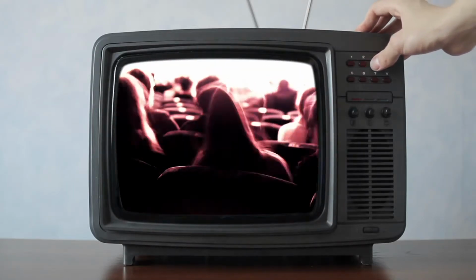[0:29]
So what do we do if we have one of these, but we need something more precise? This is just a cheap kitchen scale. Rather than spending $15 or $25 to buy a more accurate one, we're going to make one out of things we have lying around the house. The purpose of this, we'll use it in future projects to measure out fertilizers and nutrient solutions for our hydroponic system. Let's get started.
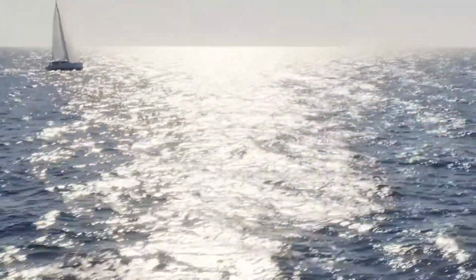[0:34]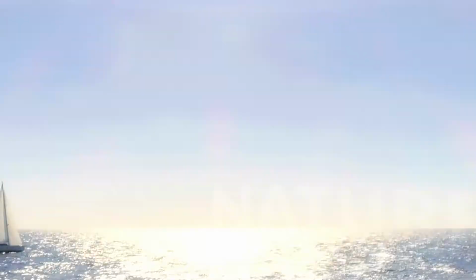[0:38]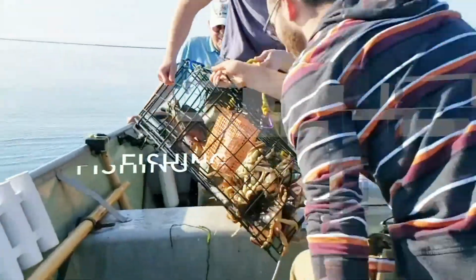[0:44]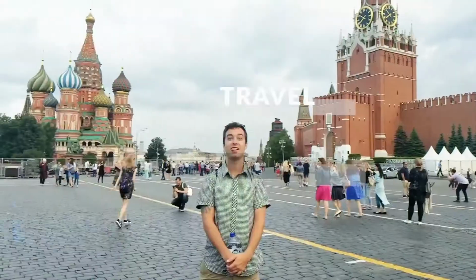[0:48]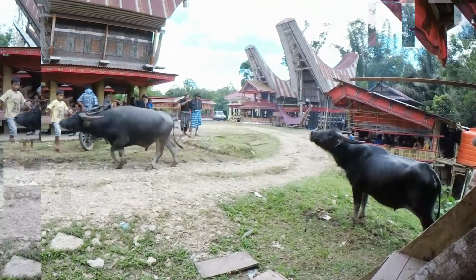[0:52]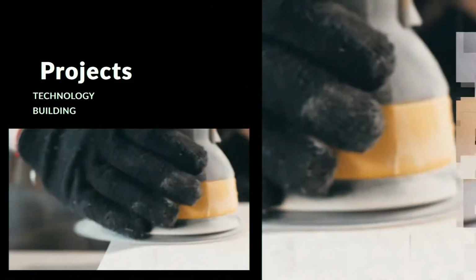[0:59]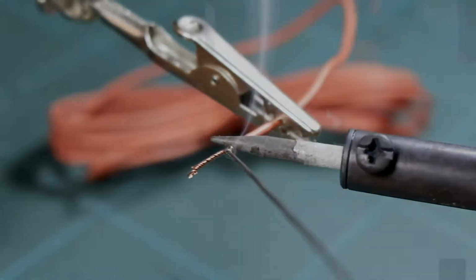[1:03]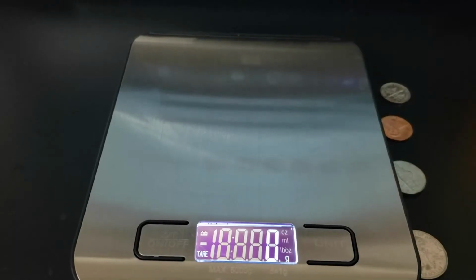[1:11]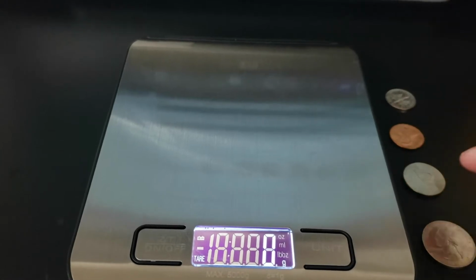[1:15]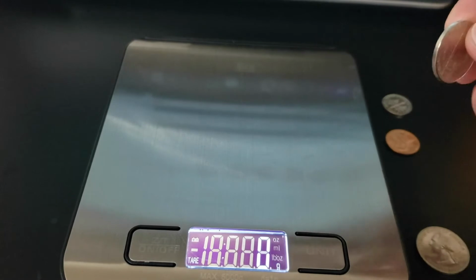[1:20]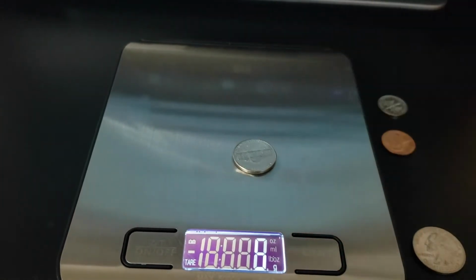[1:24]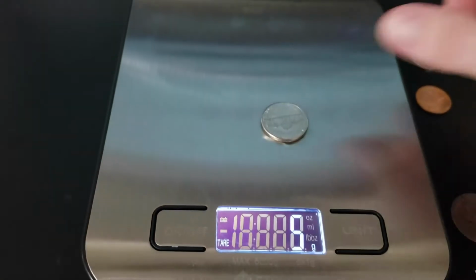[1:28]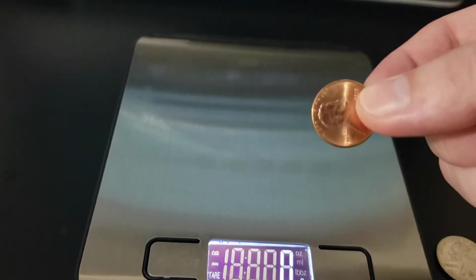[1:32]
All right, let's take a look at the problem we have. We have a series of very accurate weight measurements we can use, but this scale is not accurate enough for this. So take, for example, a US nickel, which weighs 5 grams. If we put it on the scale, yeah, it measures in at 5 grams. But then let's take something a little smaller, like a penny. A US penny should weigh 2.5 grams.
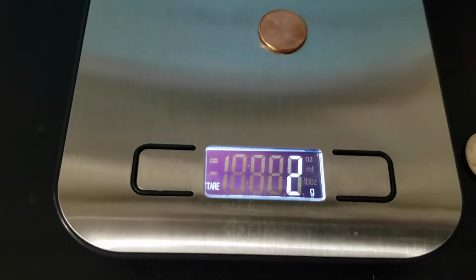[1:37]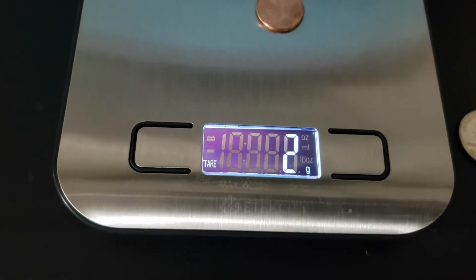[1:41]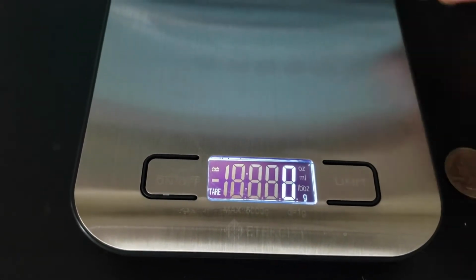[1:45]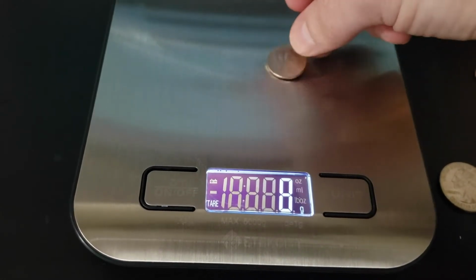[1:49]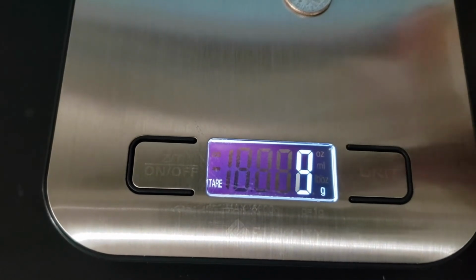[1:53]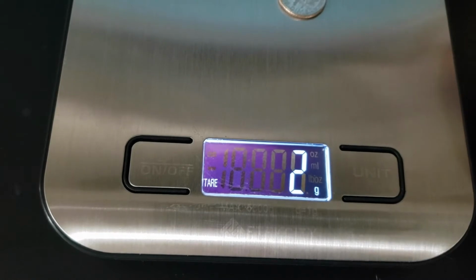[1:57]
And we have 2 grams. So is it 2.1? Is it 2.9? We can't really be sure. And let's take a US dime. This should weigh 2.2 grams. And this one weighs 2. You saw it jump to 3. See, now it's at 3, now it's at 2. It doesn't really know what it weighs.
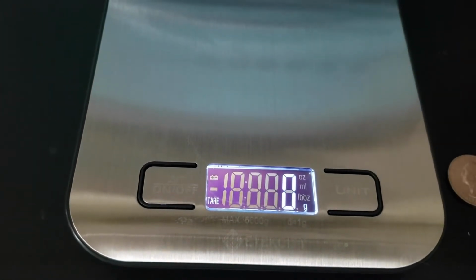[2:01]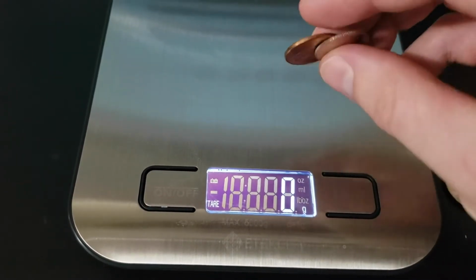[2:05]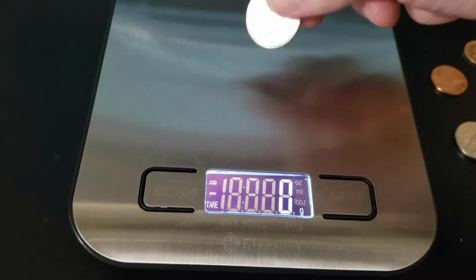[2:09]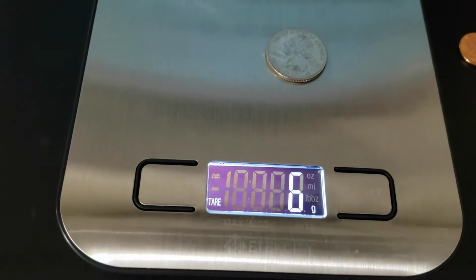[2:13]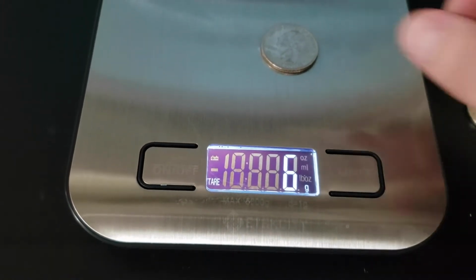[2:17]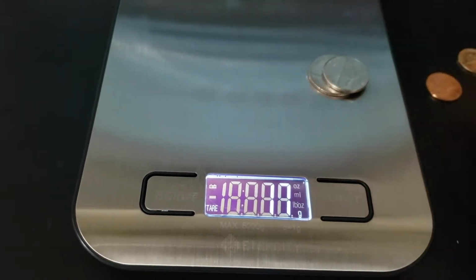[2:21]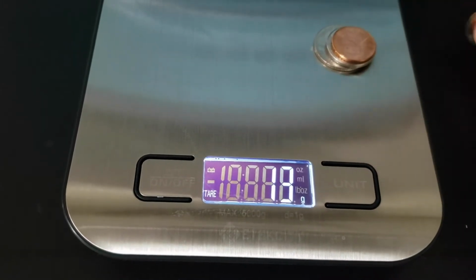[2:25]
And by logic, a penny is bigger than a dime. So why do they weigh the same amount? They don't. And let's take a quarter. What if we want something a little bigger but still more precise? This weighs 6 grams, but a quarter actually weighs 5.67 grams. So we need to get very precise with this. We could stack these and try to come up with an accurate representation, but let's just build something that's going to work a little bit better.
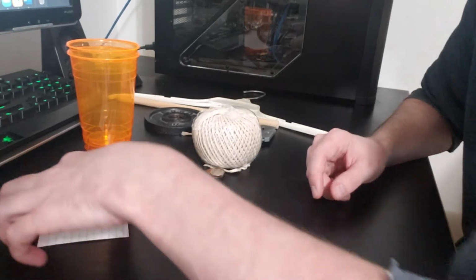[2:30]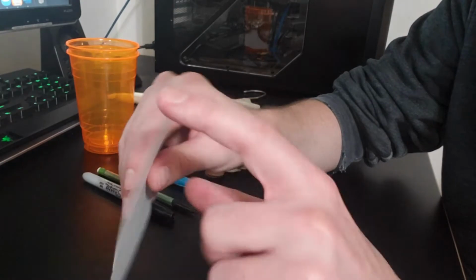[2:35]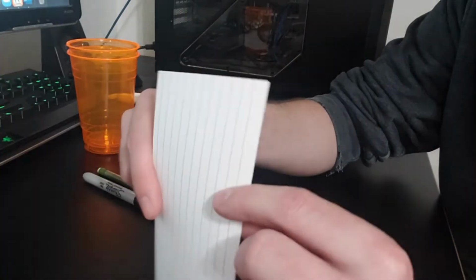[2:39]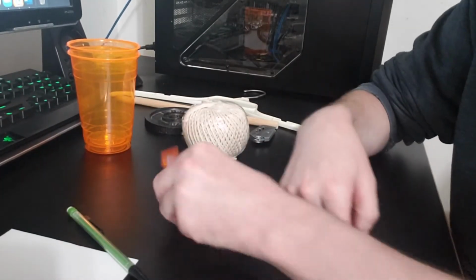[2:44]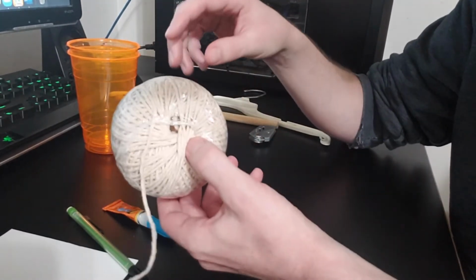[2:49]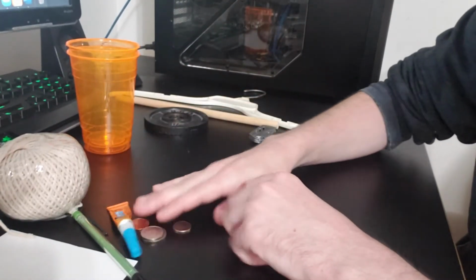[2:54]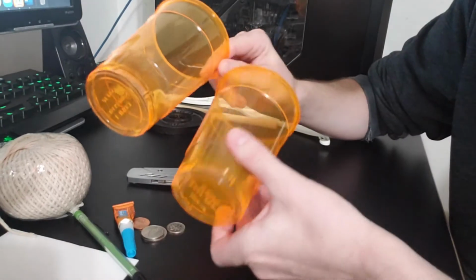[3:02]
Let's take a look at what we'll need for this project. I have an index card here. What we need is straight lines and 90-degree corners, so I'm just using a piece of cardstock for that. Sharpie, pencil, some kind of a super glue, twine, just whatever I had lying around. Any kind would work for this. We have our weights, some kind of a sharp knife, 2 plastic cups. These are going to be our holding trays for what we're weighing.
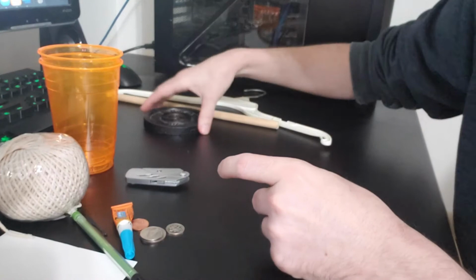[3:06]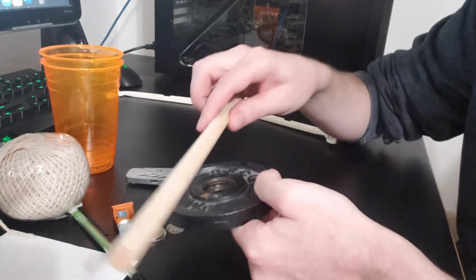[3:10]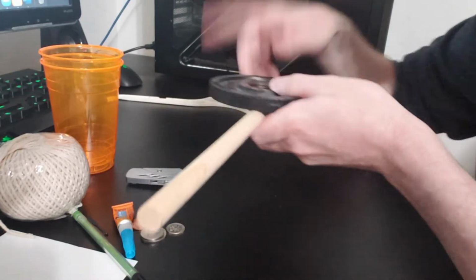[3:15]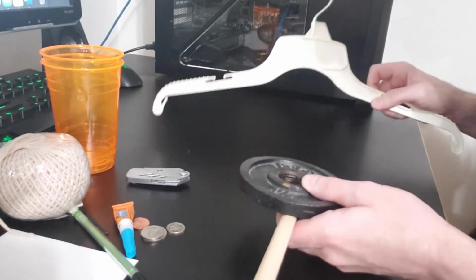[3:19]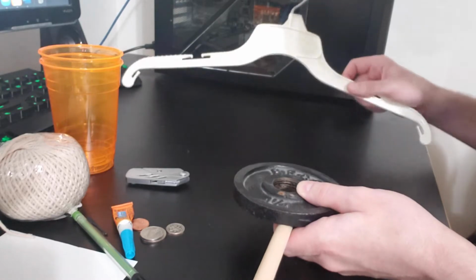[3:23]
A weight, and that's strictly to hold the pole down so I can hang it off of a desk, or in my case I'll hang it off of my computer right here. And this will be our measuring system. This will be a coat hanger. Any kind of coat hanger will be fine. This is just a scrap one that I had lying around.
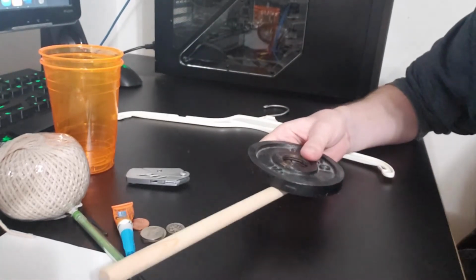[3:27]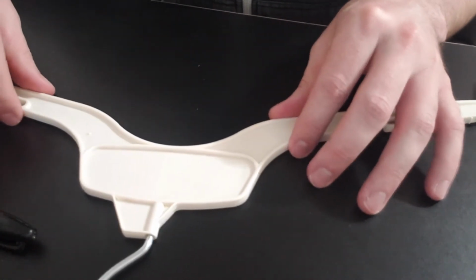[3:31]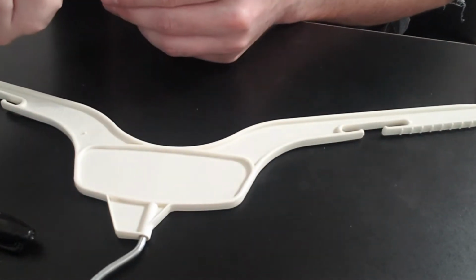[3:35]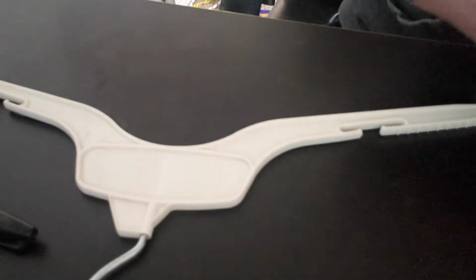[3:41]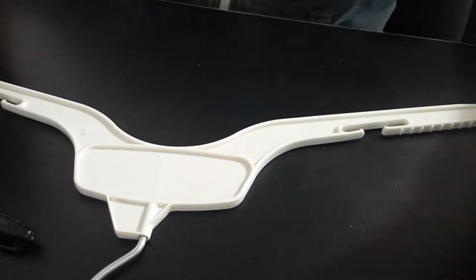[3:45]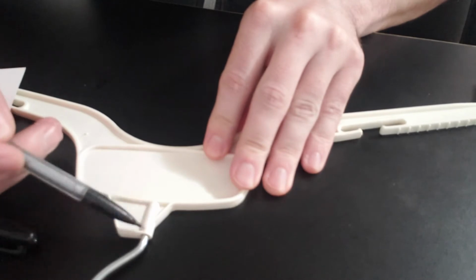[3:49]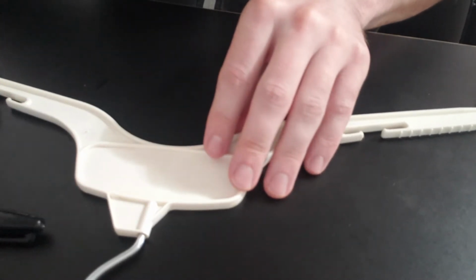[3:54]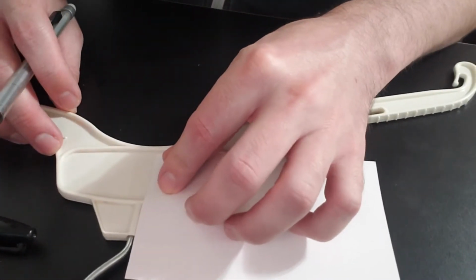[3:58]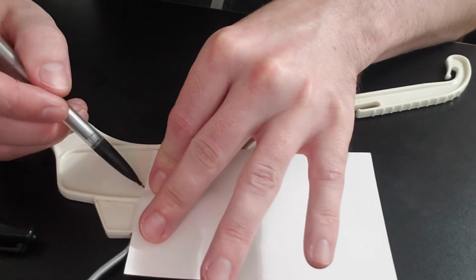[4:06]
So let's get started. So the first thing we need is a reference point so we can make sure it's actually aligned and weighing properly. So let's just do our best here. My pencil is not working. Let me grab a different one. There we go. All right, so what I'm going to do is use this reference line right here in conjunction with the end point right here. Let's see if we can make a perpendicular line on this. So let's see if we can match it up right about with the middle of that. We'll get close. It doesn't have to be perfect, but we can adjust and correct this later.
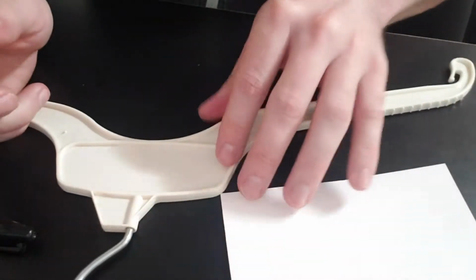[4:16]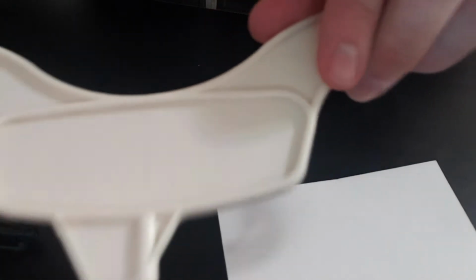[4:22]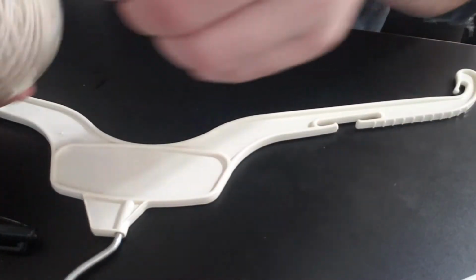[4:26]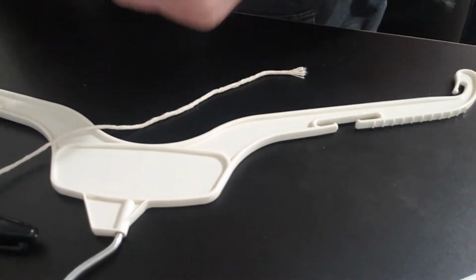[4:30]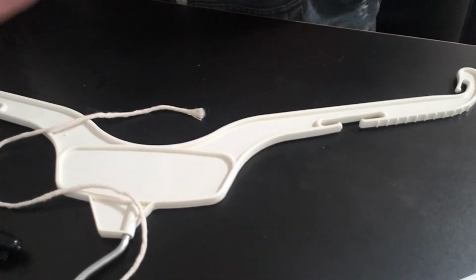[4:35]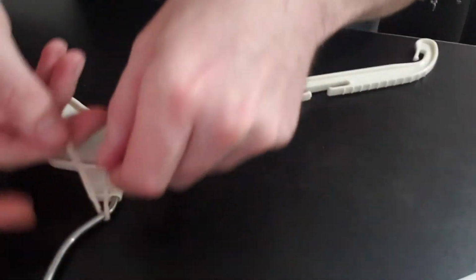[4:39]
Okay, so that looks pretty close to me. See how accurate this is. Okay, so there's our reference line. I'm not sure if you can see that on the camera. We have a reference line drawn. And now what we're going to do is create a reference point with this. So we'll take a piece of string here. We'll cut this off. And we will improvise and just tie this right around here.
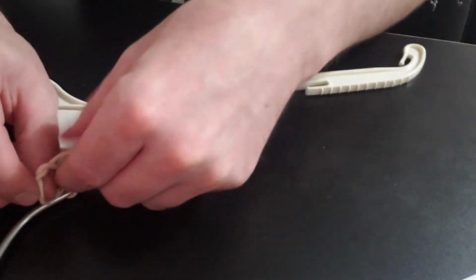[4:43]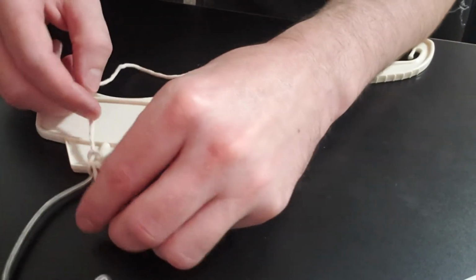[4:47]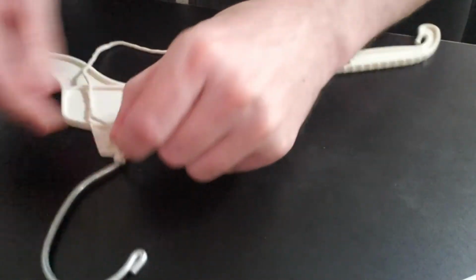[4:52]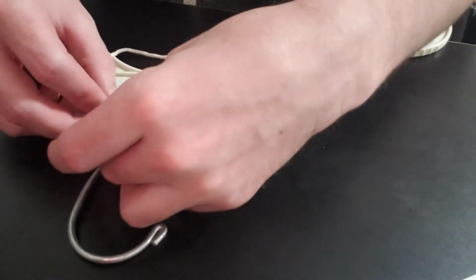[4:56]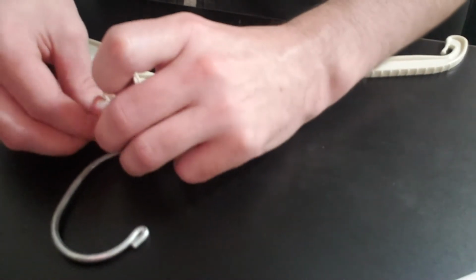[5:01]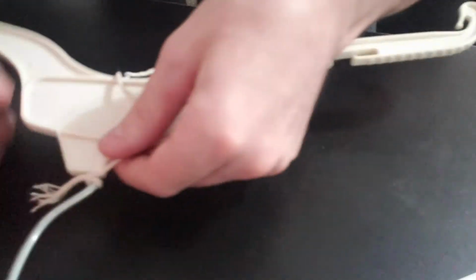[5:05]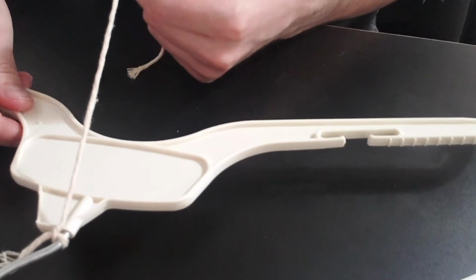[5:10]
And what this is going to be is like a plumb bob. If any of you have ever used a plumb bob, it essentially uses gravity to find a perpendicular point. So we will tie a knot on this right here so we can get this to hang down in front of this reference line to see if those two things are parallel. All right, there we go. And now we need some kind of a weighting mechanism on the end of this. I'm going to go grab some fishing weights.
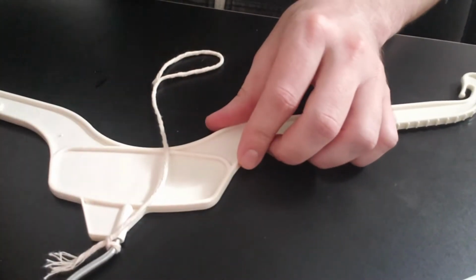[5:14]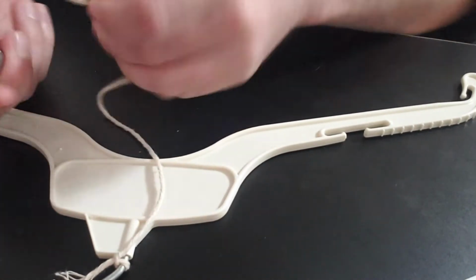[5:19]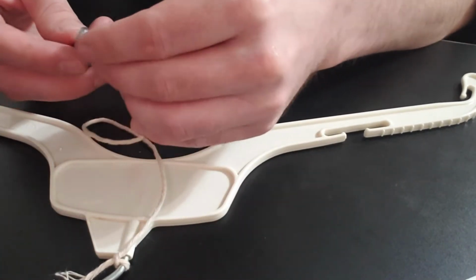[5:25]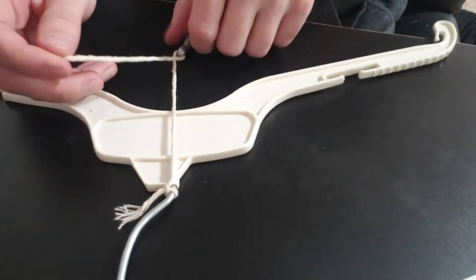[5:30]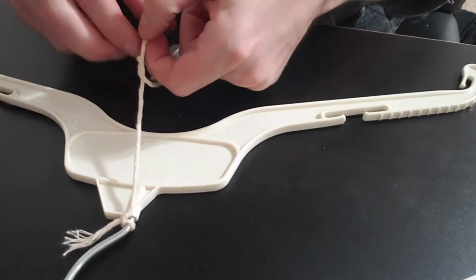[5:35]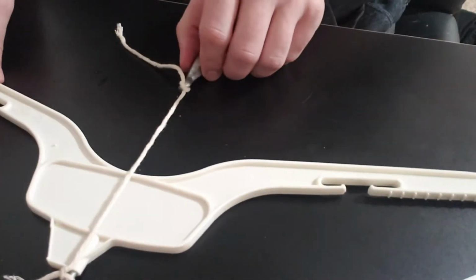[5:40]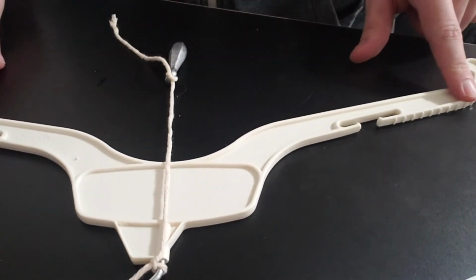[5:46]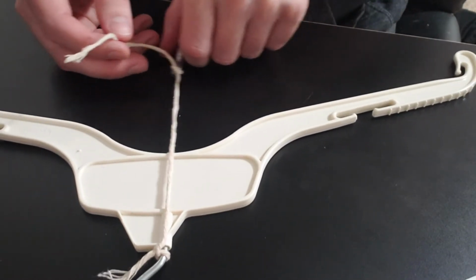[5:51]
I'll be right back. So in our materials, we also need some kind of a weight. It doesn't have to be a fishing weight. This is just convenient for me because I have them lying around. So what we'll do is take this and thread this through here and tie this up. Like I said, the purpose of this is strictly to utilize gravity to check our reference. It'll hang directly down in the center, parallel to our reference point, provided the two things at either end are equal weights. If not, it'll skew to the side.
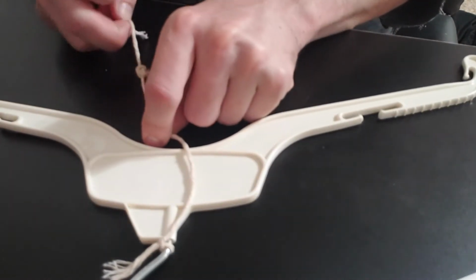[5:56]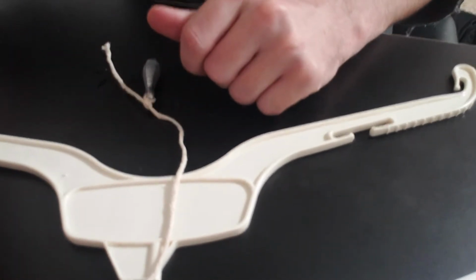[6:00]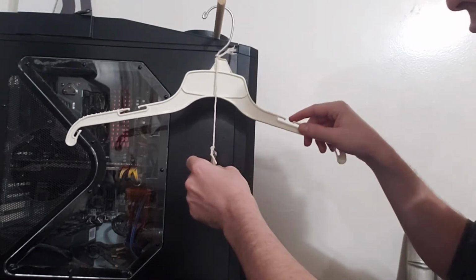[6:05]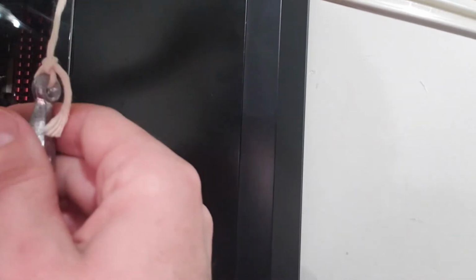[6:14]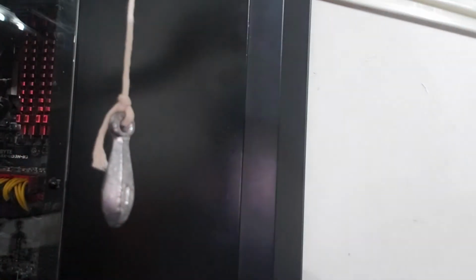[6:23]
All right, so let's check to see how close our reference point was. Okay, so here's our hanging point right here. We'll just place that right on there. And let's take a look at this and see how close we got with our line. You probably can't see the line on the camera, but I can tell that the string is hanging right in the middle of that reference line. So we did a pretty good job measuring that. So let's go ahead and make that permanent and fill that in.
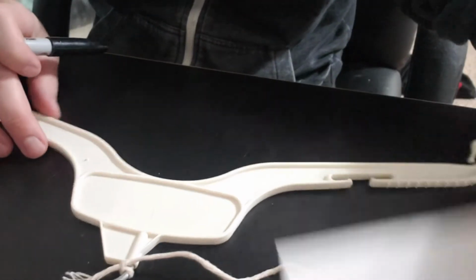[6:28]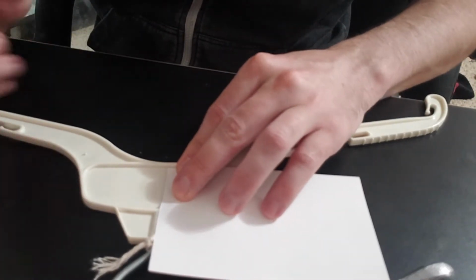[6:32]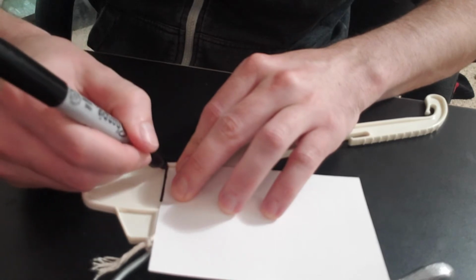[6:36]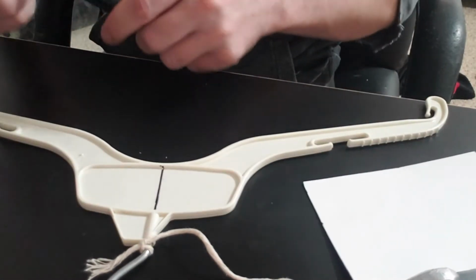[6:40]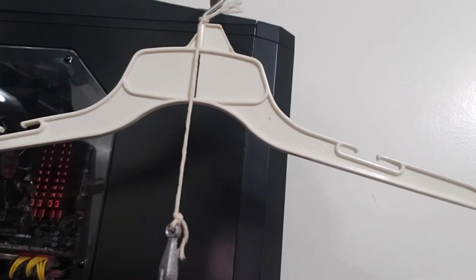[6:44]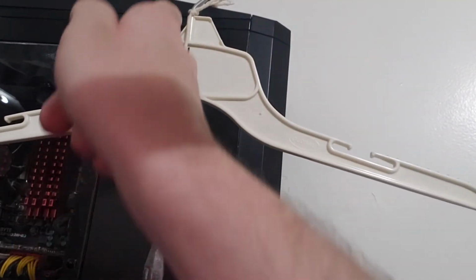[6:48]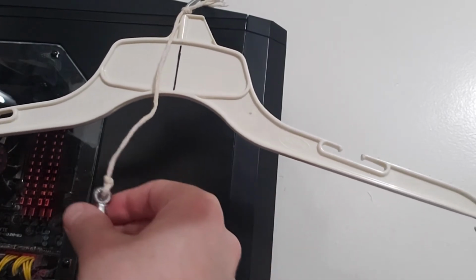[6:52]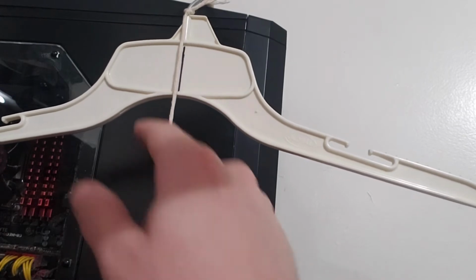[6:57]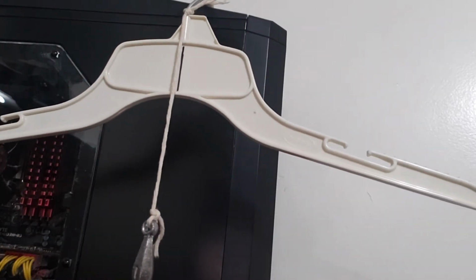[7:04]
And it looks like our string is actually just hanging right to the left of that line, but it is definitely parallel. So we'll just have to keep that in mind and do an initial weigh every time before we use it, just so we can reference where our line is. But that looks pretty parallel to me.
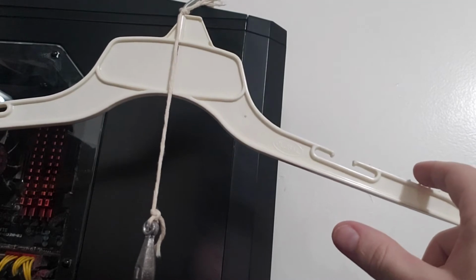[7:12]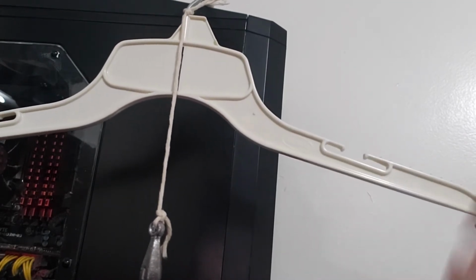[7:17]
If we were off by just a little bit, what would happen is we'd see that skew out a little bit. We could use a different color string as well, and now it crosses that line right there. So that's going to give us a pretty good accurate weight, and we'll test it out when we're done.
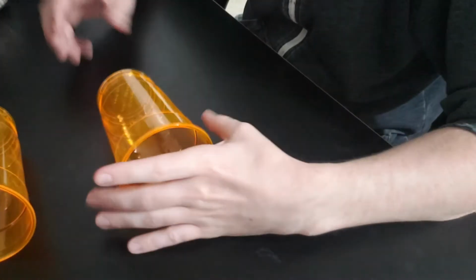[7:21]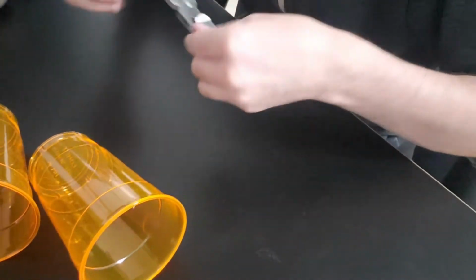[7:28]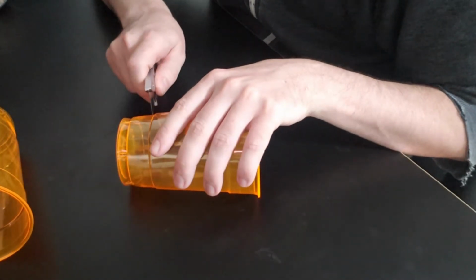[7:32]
Now what we need are some kind of balances for each end of the scale. So I'm going to use plastic cups, and we're going to be very careful while we're cutting these, because this could get bad.
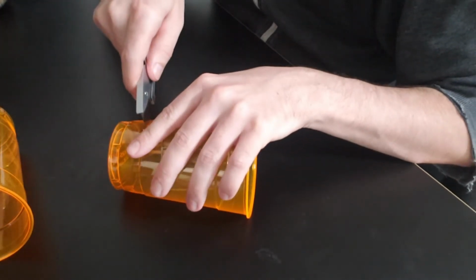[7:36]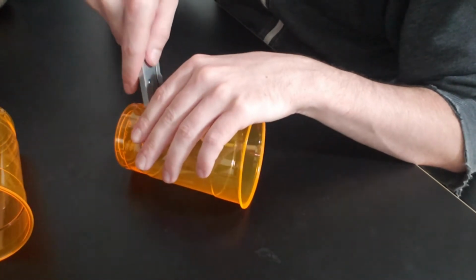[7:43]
Maintain this line right here. It's not going to be perfect, but it should get us pretty close, and we can adjust the scale when we're done if we made any mistakes and the weights are off by a little bit.
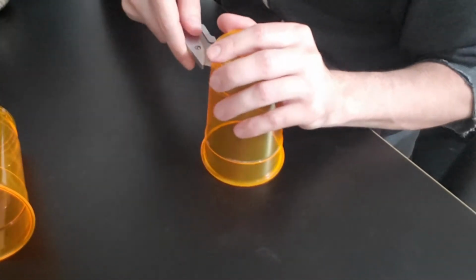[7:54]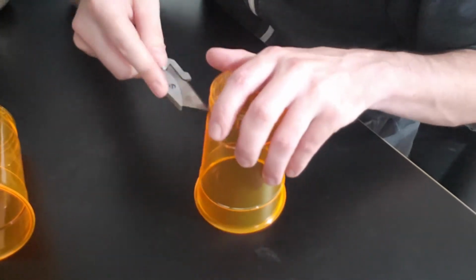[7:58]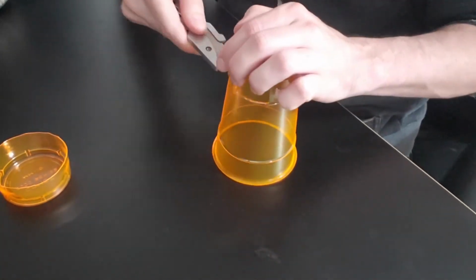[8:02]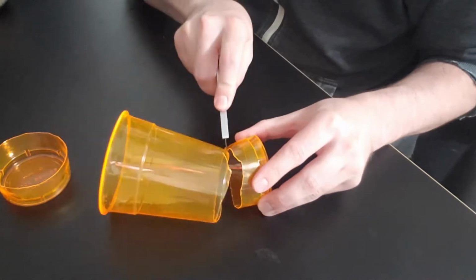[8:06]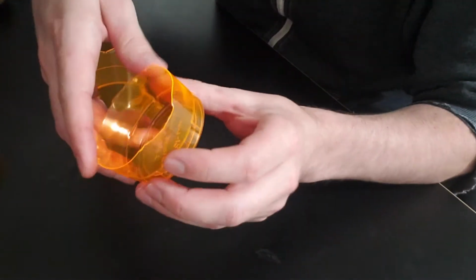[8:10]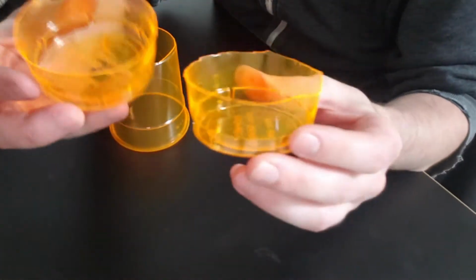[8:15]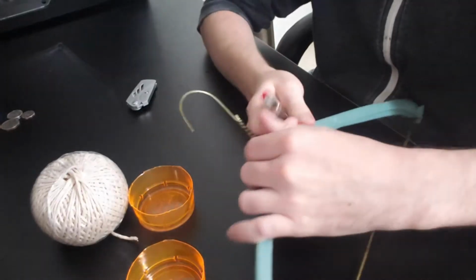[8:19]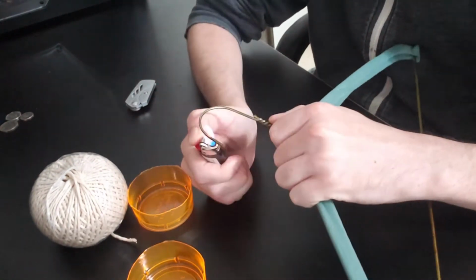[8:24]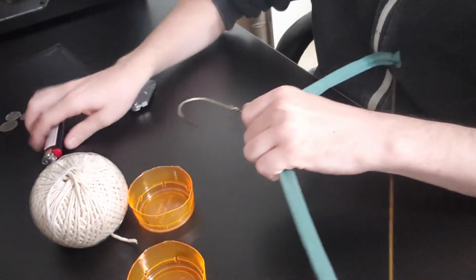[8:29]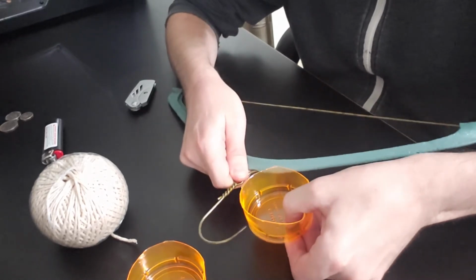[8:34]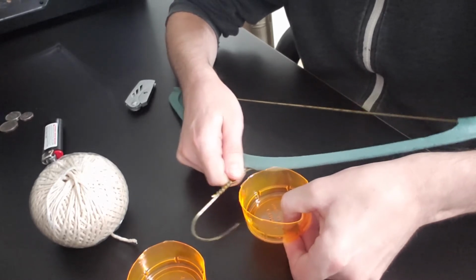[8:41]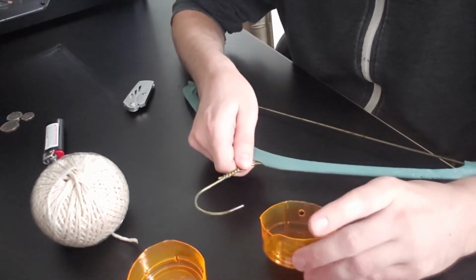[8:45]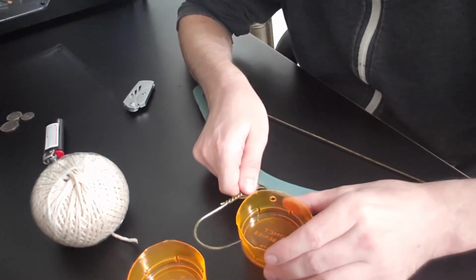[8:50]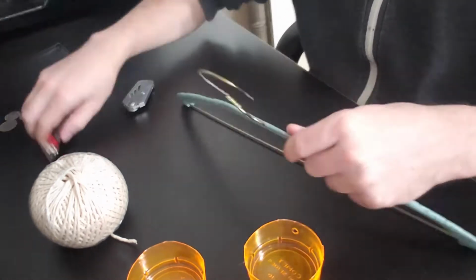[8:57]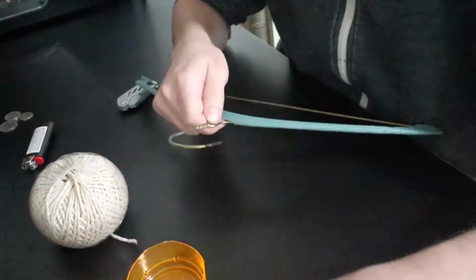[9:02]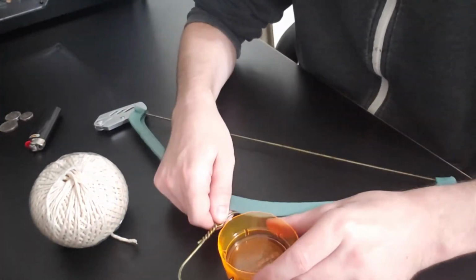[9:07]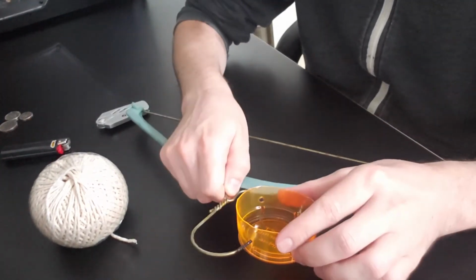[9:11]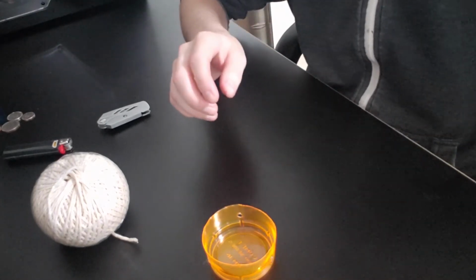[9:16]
The second one got a little sloppy, but that should do. So this is what we'll put whatever we're weighing in. That should do it.
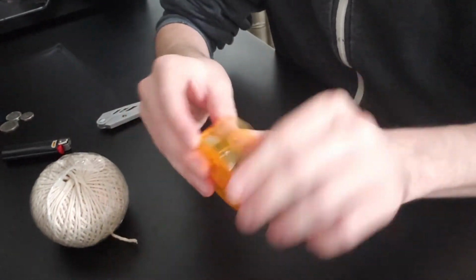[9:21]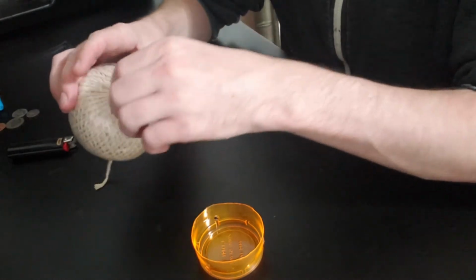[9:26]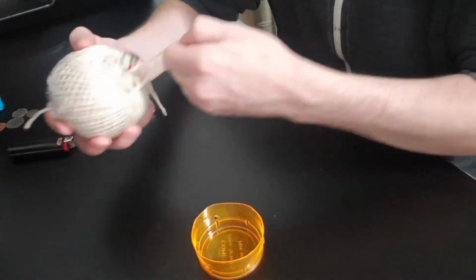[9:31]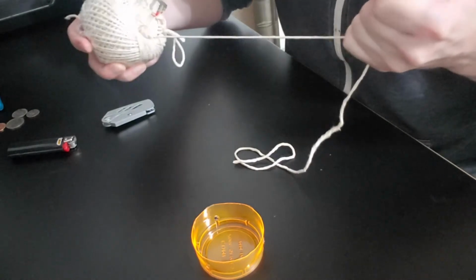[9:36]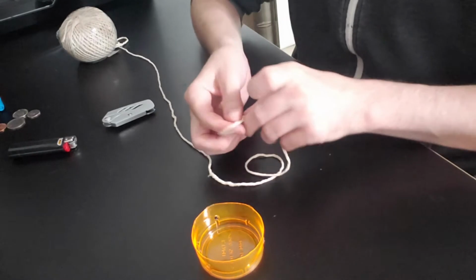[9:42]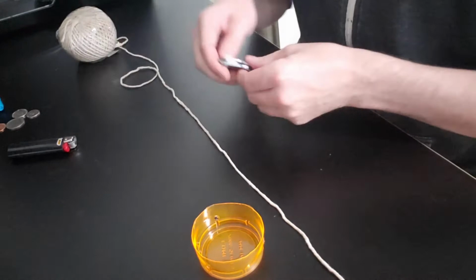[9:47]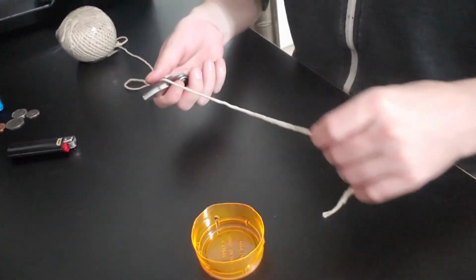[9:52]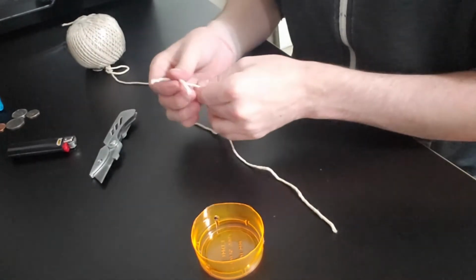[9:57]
Alright, so now let's set these up. So what we want to do, get some string out. And we essentially want 3 equal pieces. That should be plenty long, right? Give ourselves a little bit of playroom. Should be good.
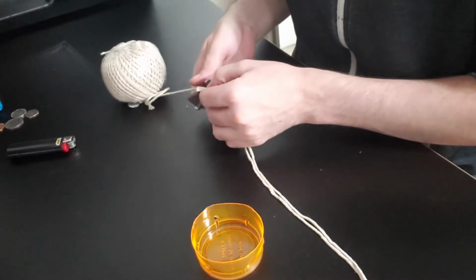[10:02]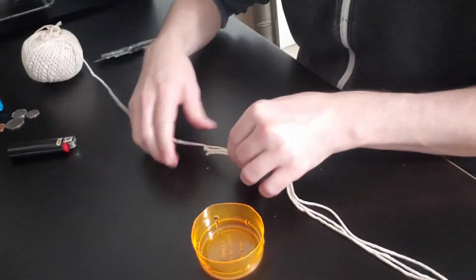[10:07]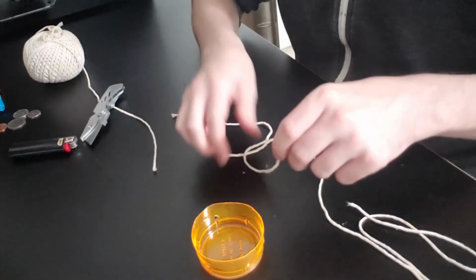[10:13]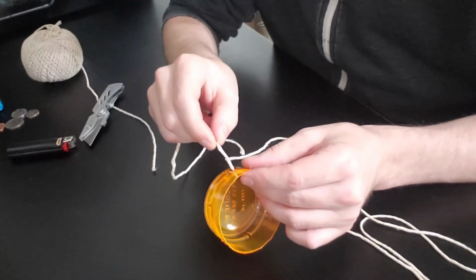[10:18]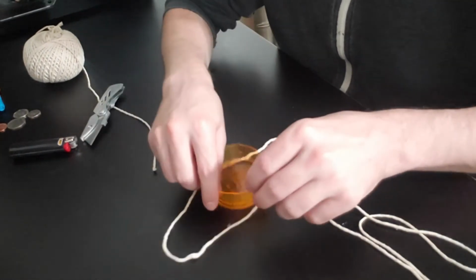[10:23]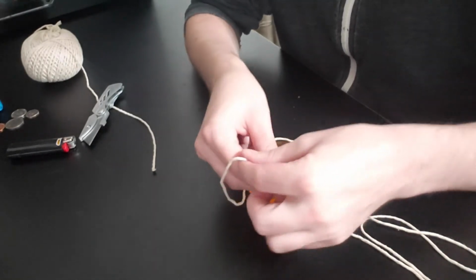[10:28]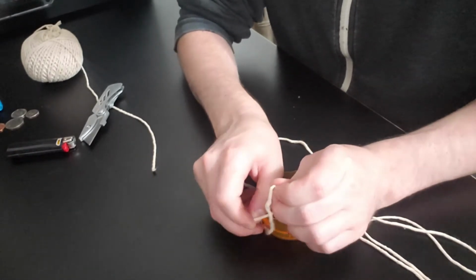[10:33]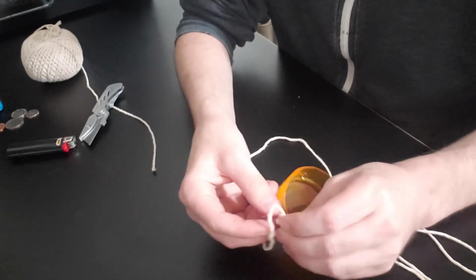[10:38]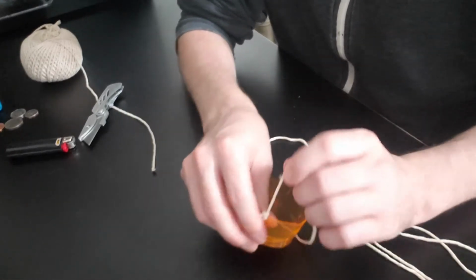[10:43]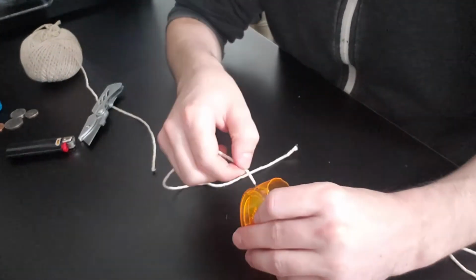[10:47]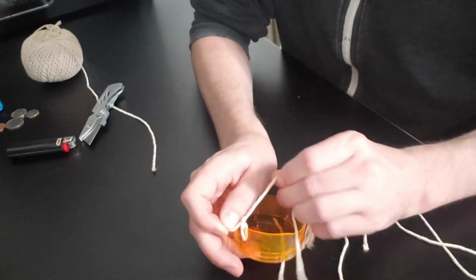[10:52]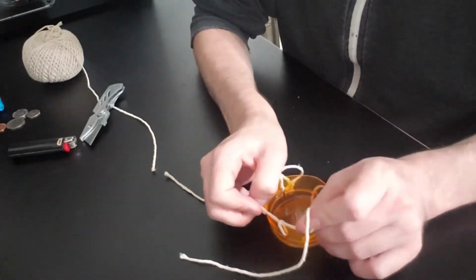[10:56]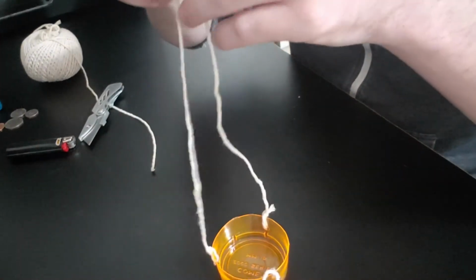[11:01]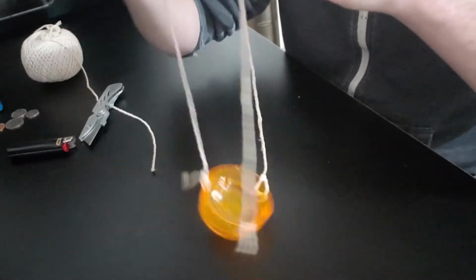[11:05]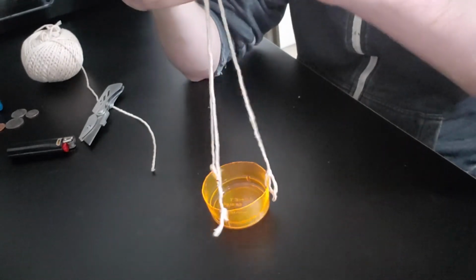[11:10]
I like doing half hitches, but any knot would work fine. Just one side. Now what we can do is we can join these all together. And we'll try to balance them.
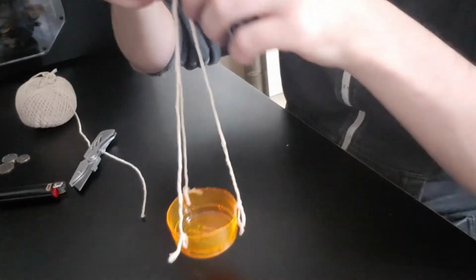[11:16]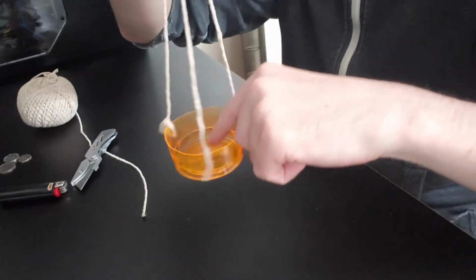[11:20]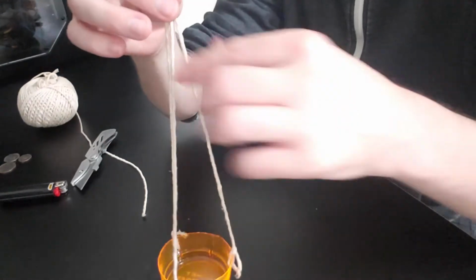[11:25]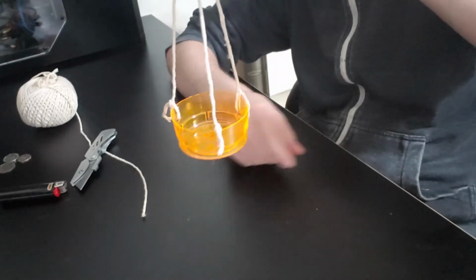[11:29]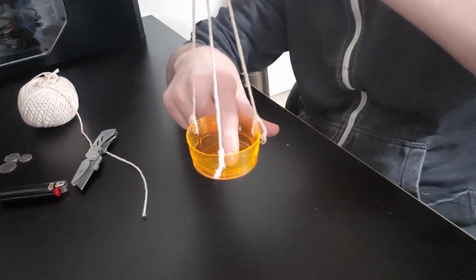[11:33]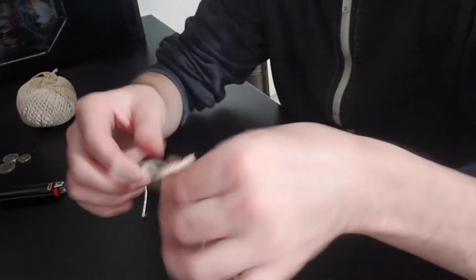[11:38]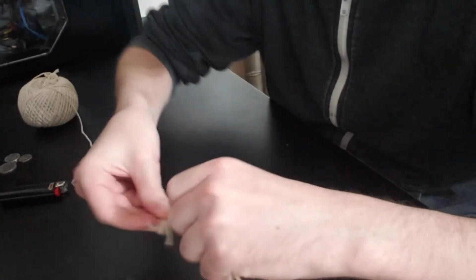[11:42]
See if we can adjust the camera a little bit. We'll try to adjust them as close to possible so this is hanging level. Just holding them right here. Trying to get this to look relatively perpendicular to the ground. That should be fine. And then we'll take where we balance them and we'll just put a knot in that right there.
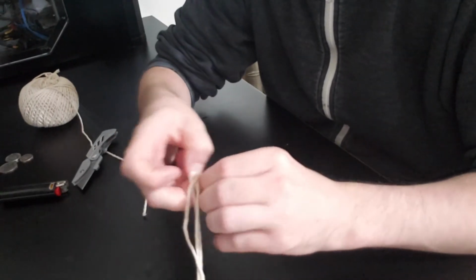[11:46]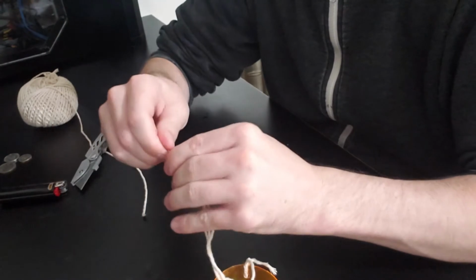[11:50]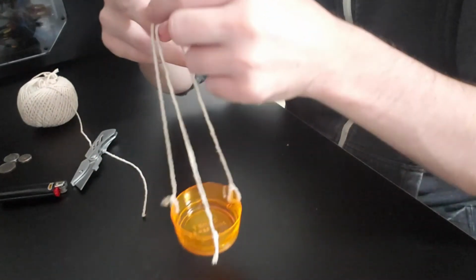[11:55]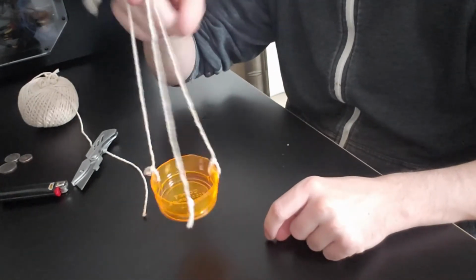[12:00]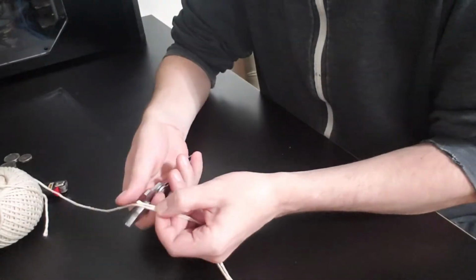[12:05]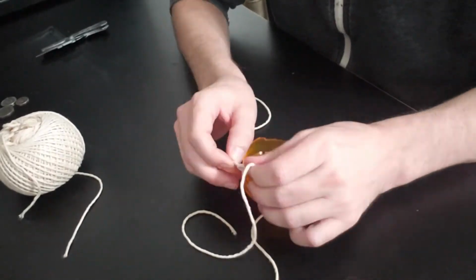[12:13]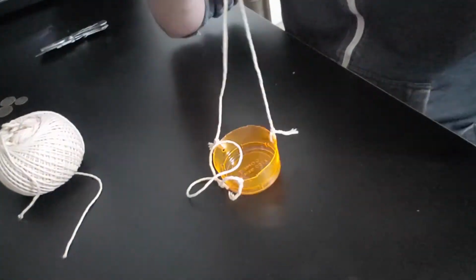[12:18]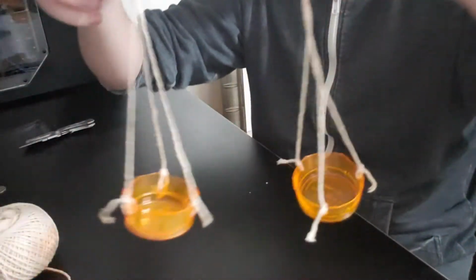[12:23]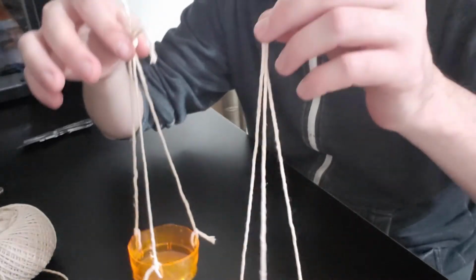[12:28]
Tie those all together. There we go. There's one basket. Let's do the other one. All right, there we go. Let's try it out.
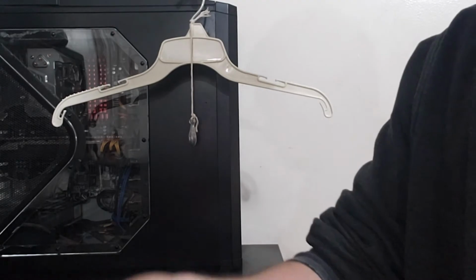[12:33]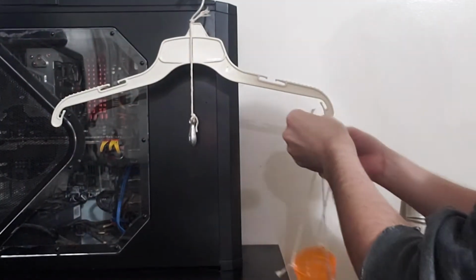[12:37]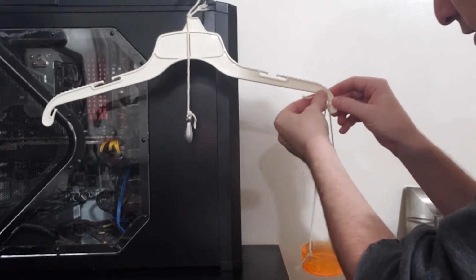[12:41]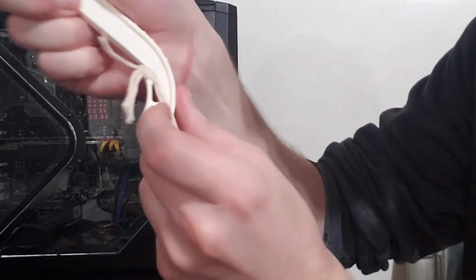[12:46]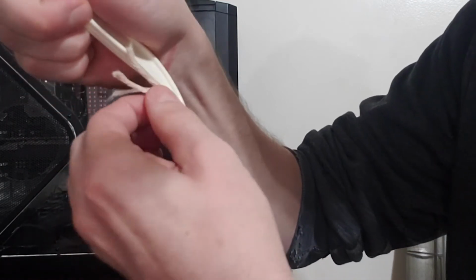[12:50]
Okay, let's see how well these balance initially. We can make any micro adjustments. So I have these handy little hooks right here on the edge of my hanger. So I'm just gonna wedge these knots down into these little holes, into these notches. Should give it some good grip there.
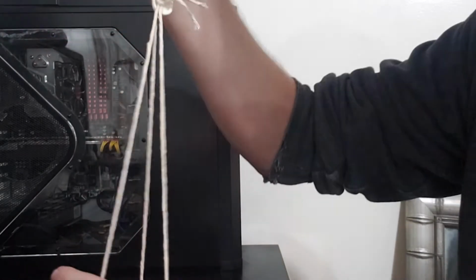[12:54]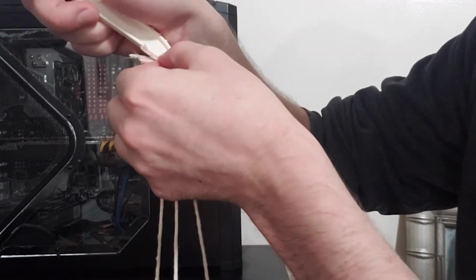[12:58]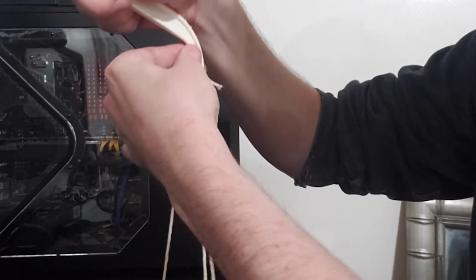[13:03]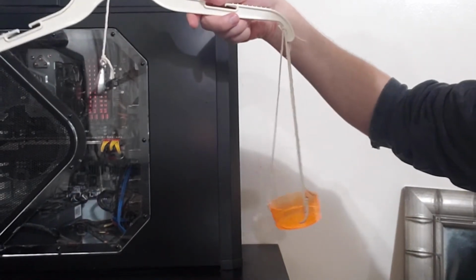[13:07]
Adjust it a little bit to make it hang a little flatter. There we go, that looks pretty good. Let's do the other side.
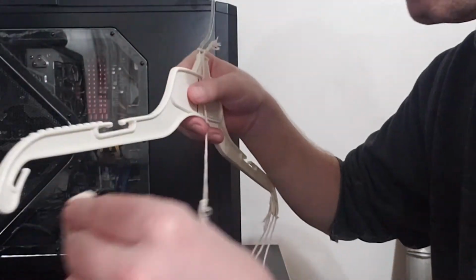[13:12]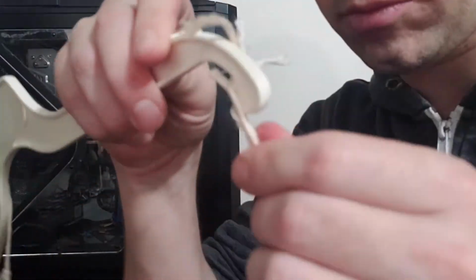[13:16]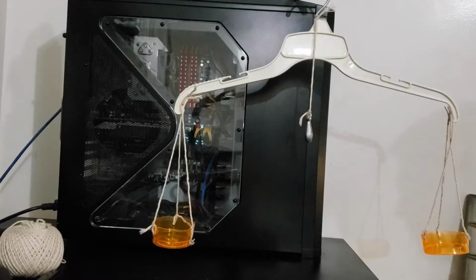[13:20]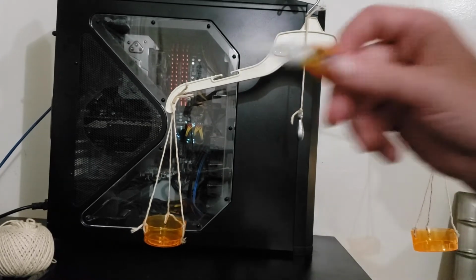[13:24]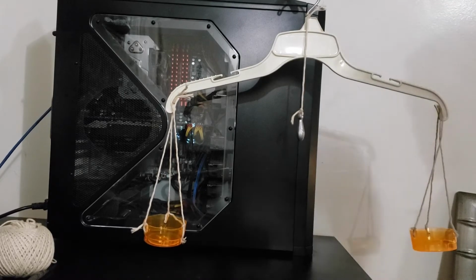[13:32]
And now what we're going to do is we're going to secure everything together. So we'll grab our super glue and we'll just tidy up all these joints. Put a dab of glue on each of the knots in each place where it connects to the scale. That way nothing gets loose on us.
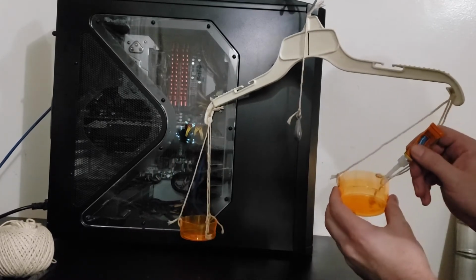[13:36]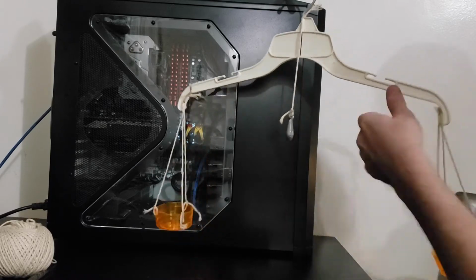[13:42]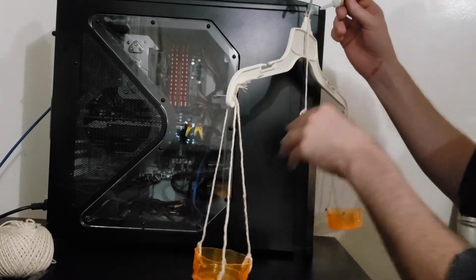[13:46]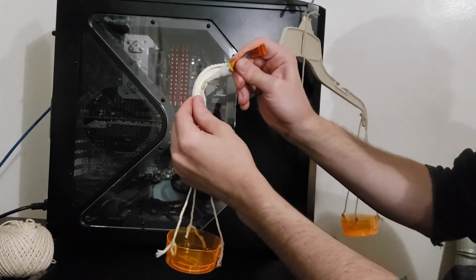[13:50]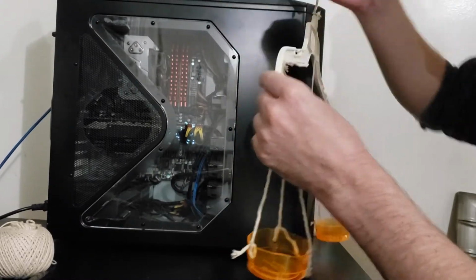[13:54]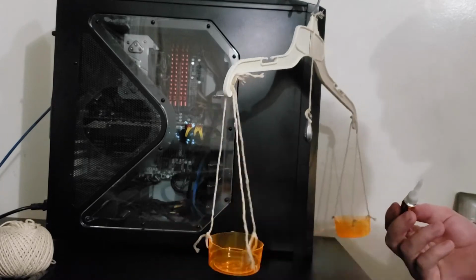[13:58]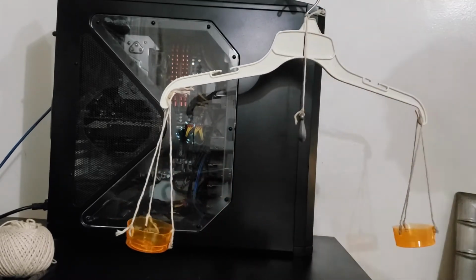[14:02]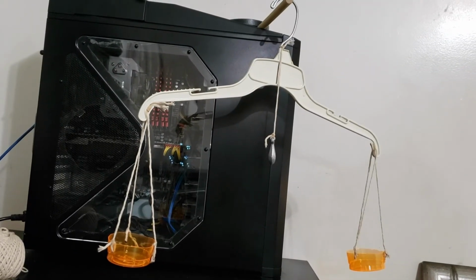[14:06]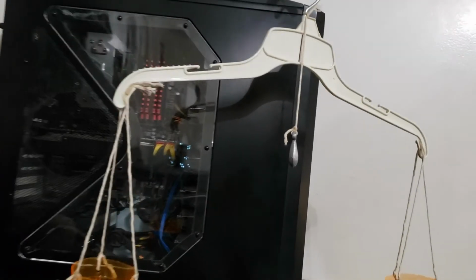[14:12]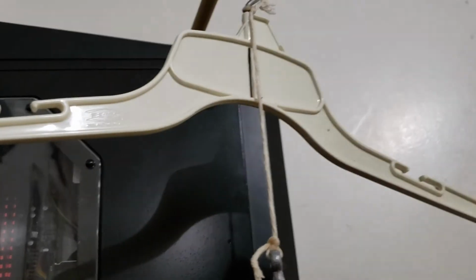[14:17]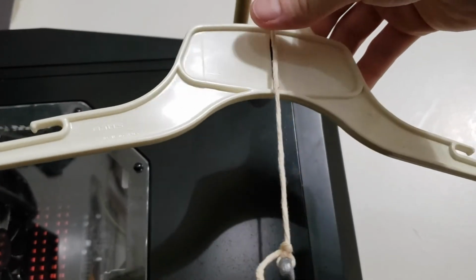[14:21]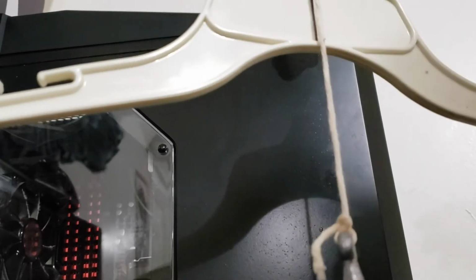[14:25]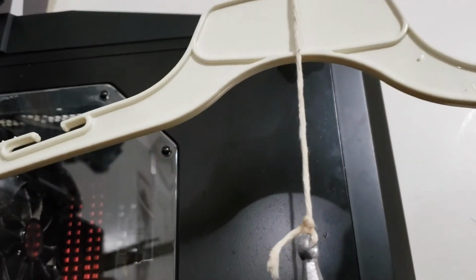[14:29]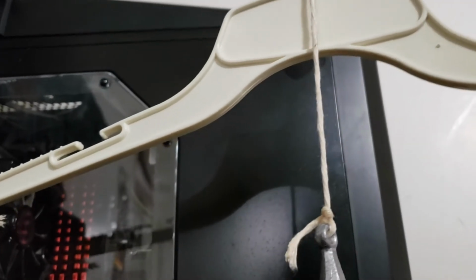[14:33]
Alright, so everything is dried up. There's the finished product. Let's check the balances. It looks a little off to me. So we'll see how accurate we can get in here for you guys with the camera. Let's adjust that. Let's get it to stop swinging. Fix the camera while that's happening.
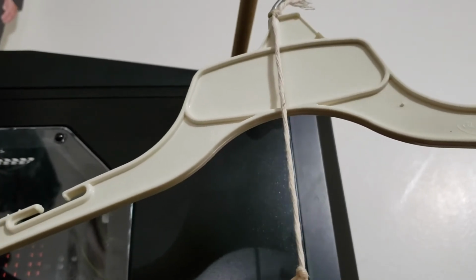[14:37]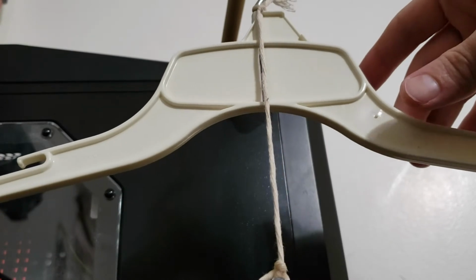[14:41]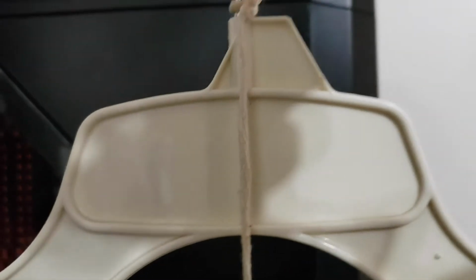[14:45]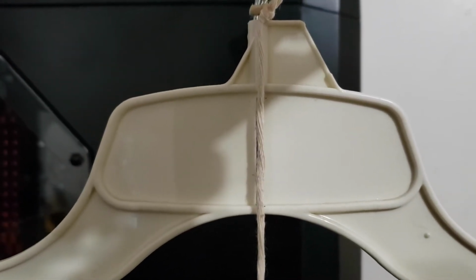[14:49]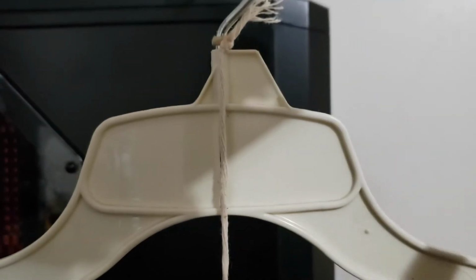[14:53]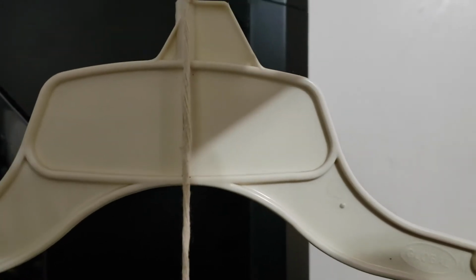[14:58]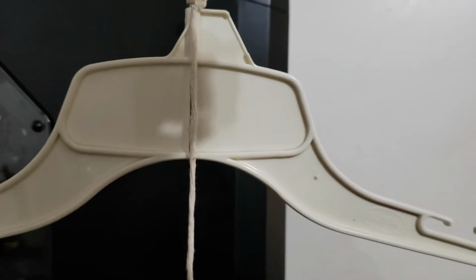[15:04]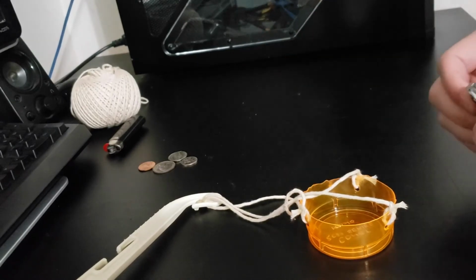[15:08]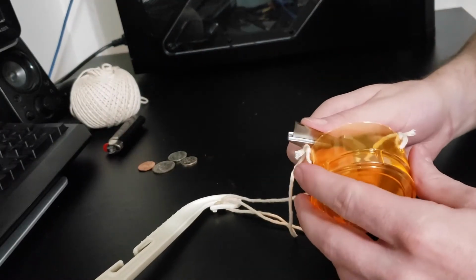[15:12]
So if we're looking directly at it, we are off to the right just a hair, which means our right side is a little bit heavier. Just barely. Maybe by a few fractions of a gram is all. So we'll shave off a little more plastic from that side. Alright, let's lighten this side up just a little bit. Just barely off.
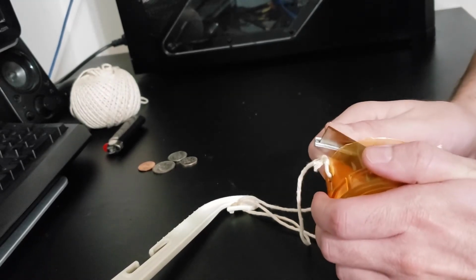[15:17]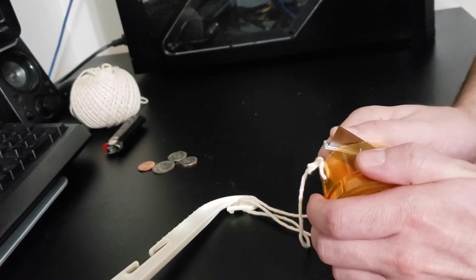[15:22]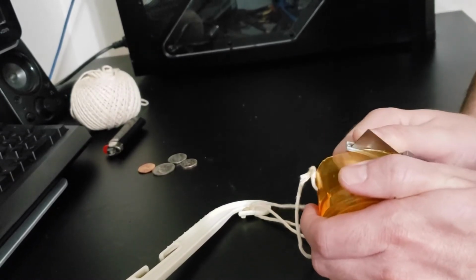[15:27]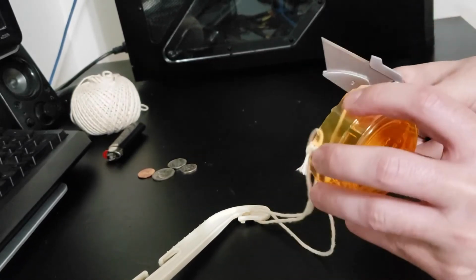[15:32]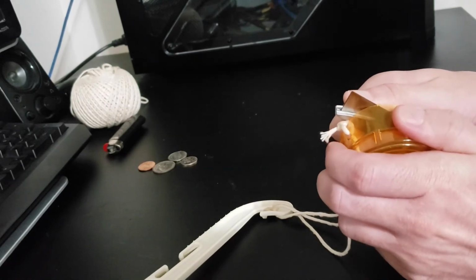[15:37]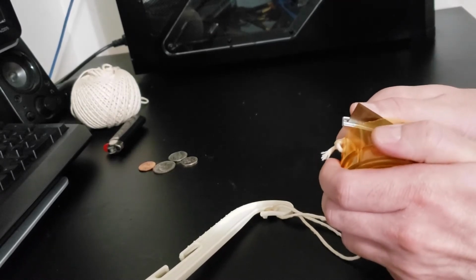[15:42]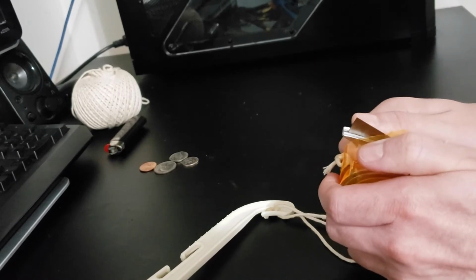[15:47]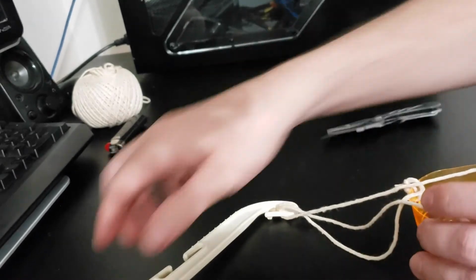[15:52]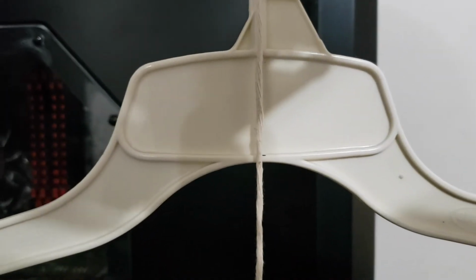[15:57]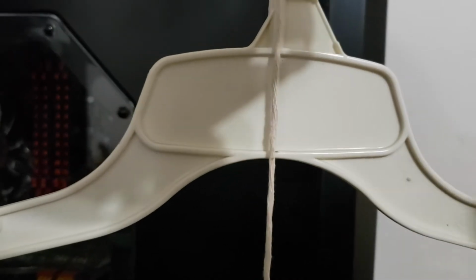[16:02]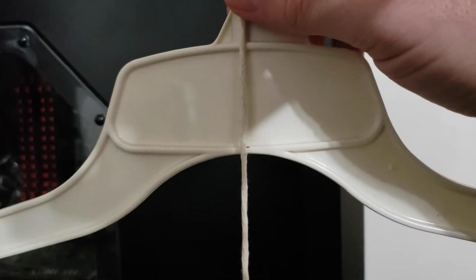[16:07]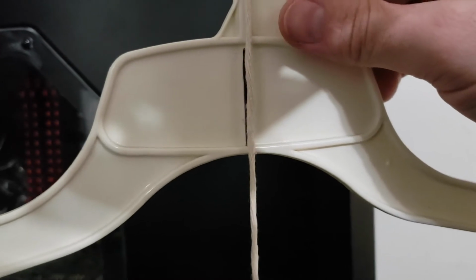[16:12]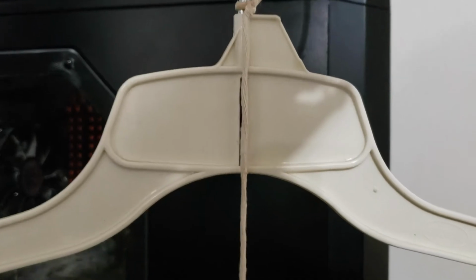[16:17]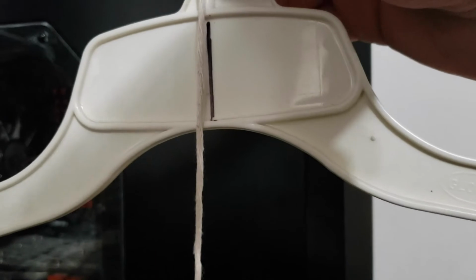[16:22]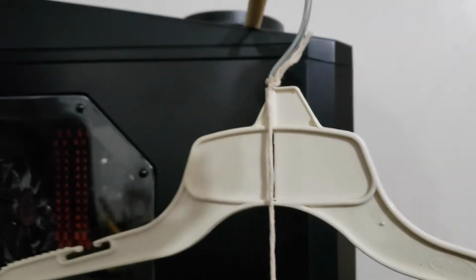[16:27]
Let's try that out. That looks pretty dead on. I can live with that. We have it readjusted so the center is now in the center of the string. Let's move that just a little bit. I'm still not happy with that. I'm gonna keep playing with this.
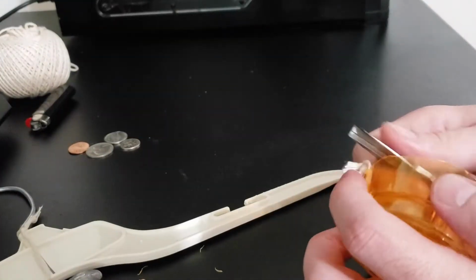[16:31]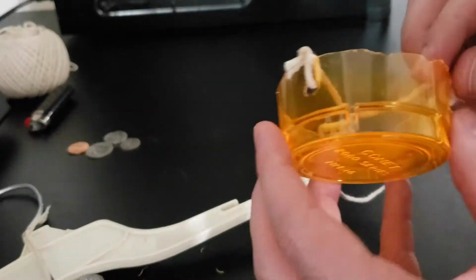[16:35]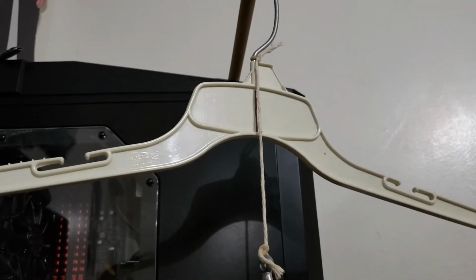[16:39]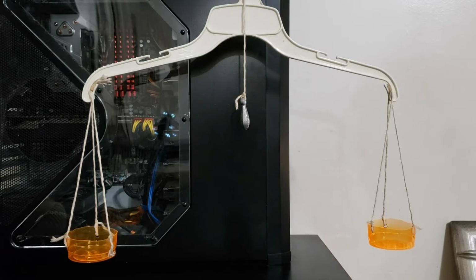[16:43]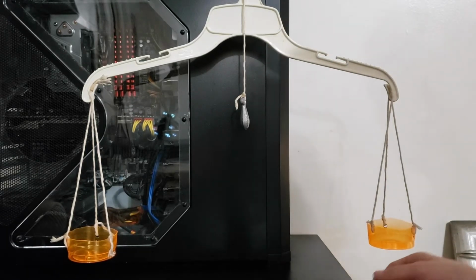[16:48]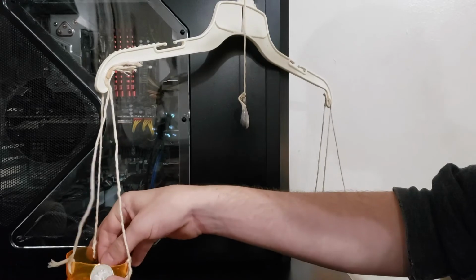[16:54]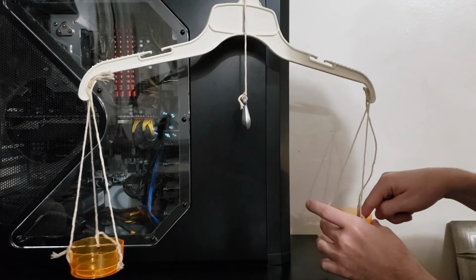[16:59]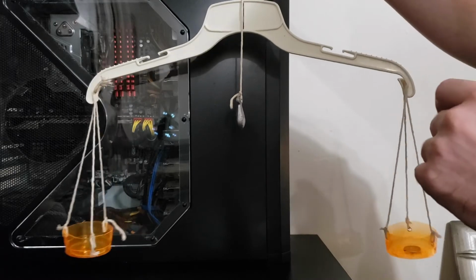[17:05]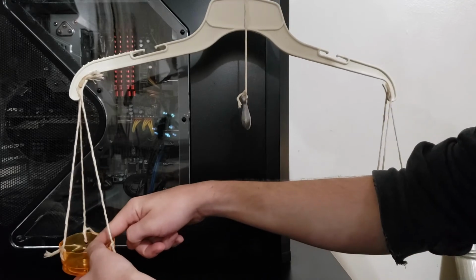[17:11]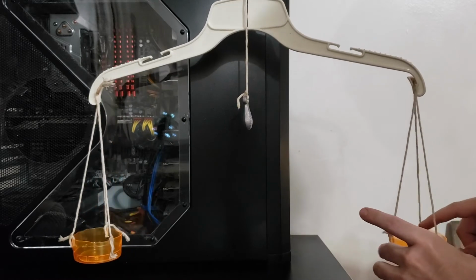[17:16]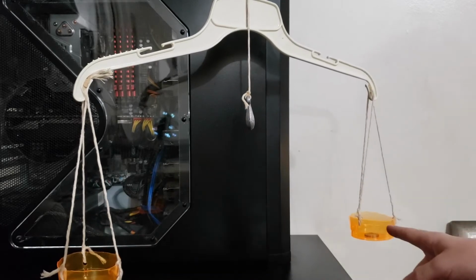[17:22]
So now that we're done with this, we can get some pretty accurate measurement comparisons. Let's check it. Let's see if 5 grams equals 5 grams. These are 2 nickels. And one thing that's really important when you're using a scale like this is you want to keep your weights as close and perpendicular to the attachment point. If you have one of them on the inside and one of them on the outside, well then your weights are gonna be skewed.
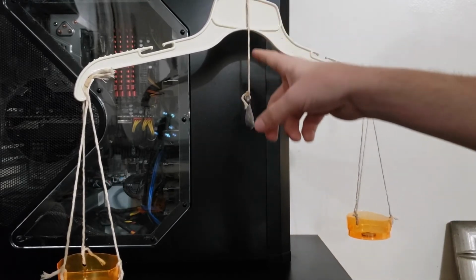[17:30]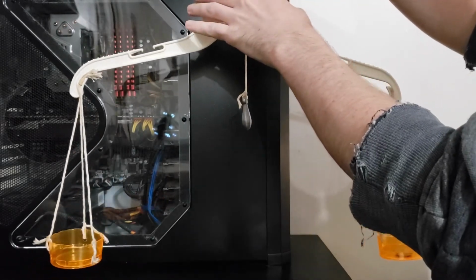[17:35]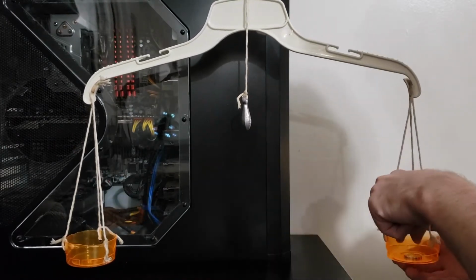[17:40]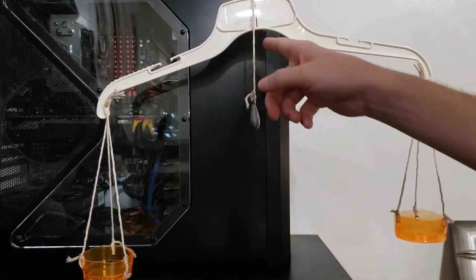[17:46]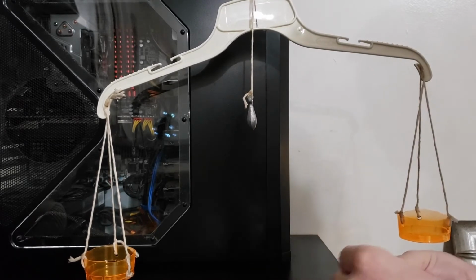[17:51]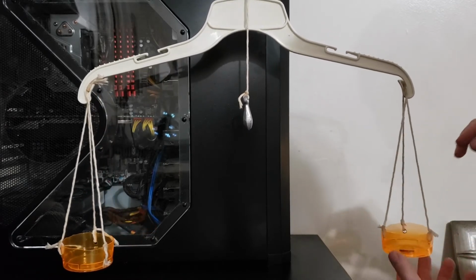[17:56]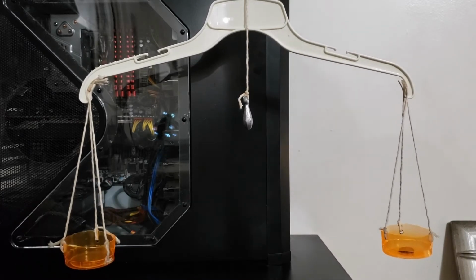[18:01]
So it looks like, according to our scale, 5 grams does equal 5 grams. I don't know if you guys can see that. It's hanging a little crooked. But those do indeed match up. So now what we could do is we could do something different. We could say, does 5 grams, so you can see how far off that is with just 5 grams, does that equal 2 pennies? Because 2 pennies are 2.5 grams each. Put that in there. And that looks pretty much right on the line to me.
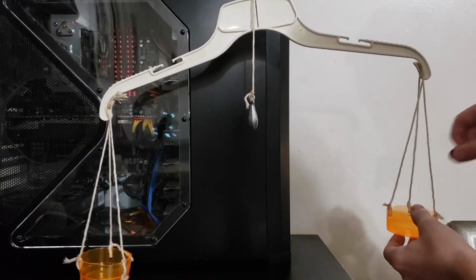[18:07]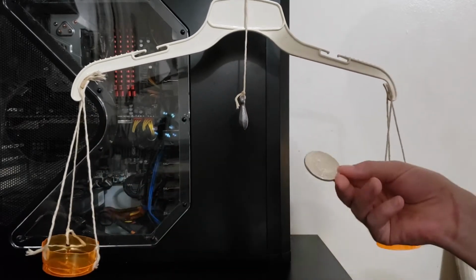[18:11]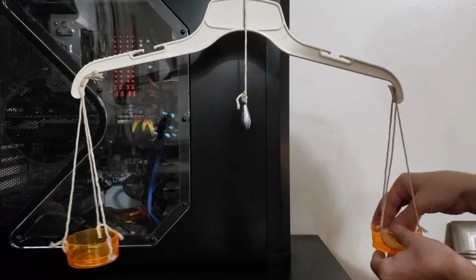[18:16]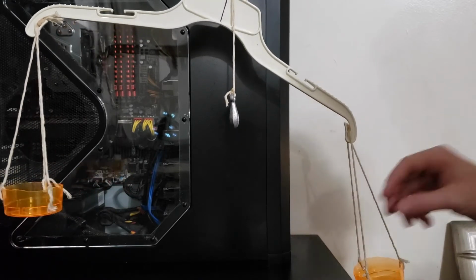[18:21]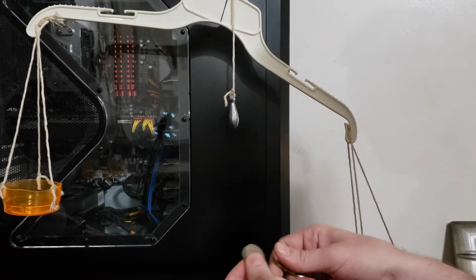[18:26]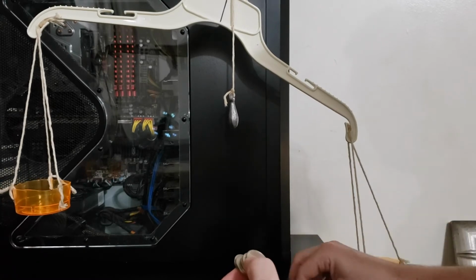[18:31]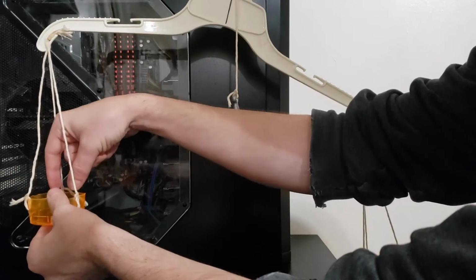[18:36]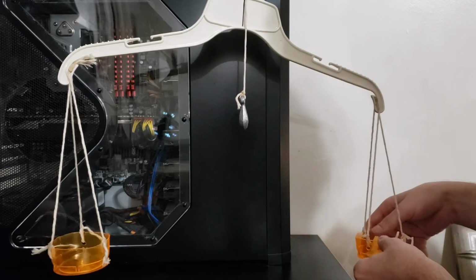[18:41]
What we could do again is we could say something like, well, how many coins does it take to make 1 ounce? This is a 1 ounce silver coin. So we can put our 1 ounce in here, because we know that's a concrete measurement. And then 1 ounce should be pretty close to this. 5, 10, 15, 20, 25 grams. 5 nickels. Let's put those in here and see how close we get with that. Make sure these are both centered in the cups.
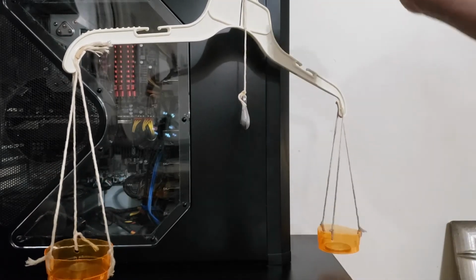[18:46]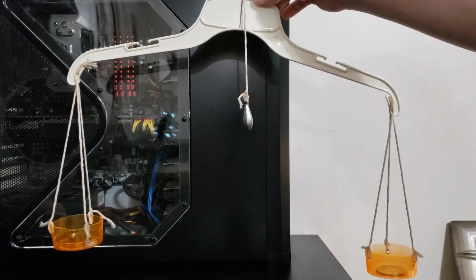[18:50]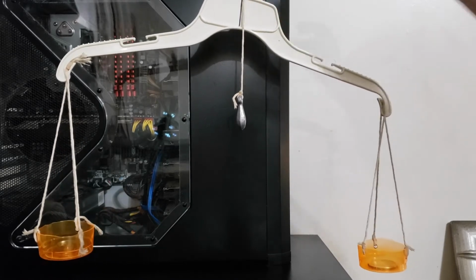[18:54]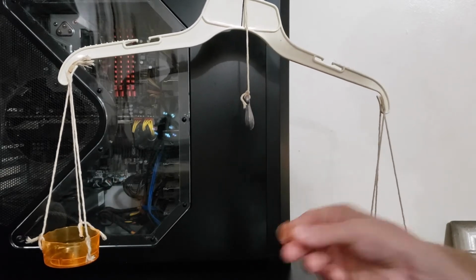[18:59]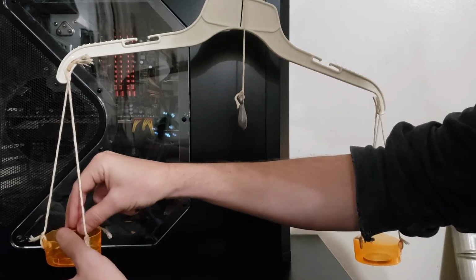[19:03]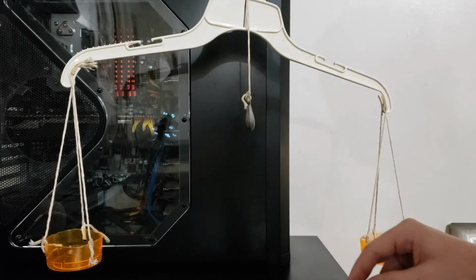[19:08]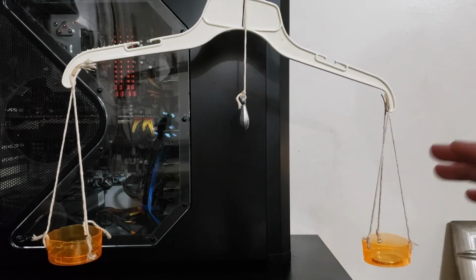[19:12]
And we can see that 1 ounce is clearly heavier than 25 grams, because an ounce should be 28.3 grams, I believe. So if we put a penny in, which is 2.5 grams, this should get us to 27.25 grams. And we're off by just a hair, so we're pretty close. We don't have anything smaller than a penny, though, to finish that measurement.
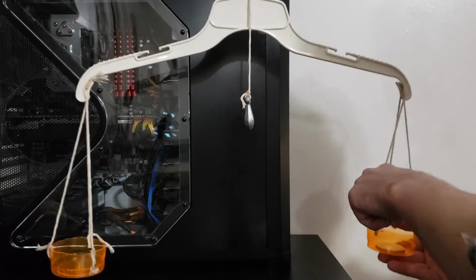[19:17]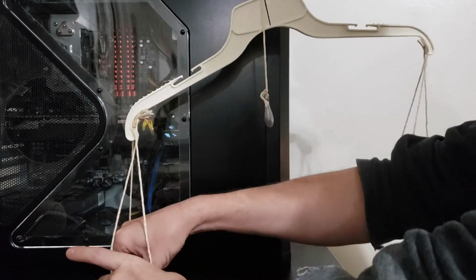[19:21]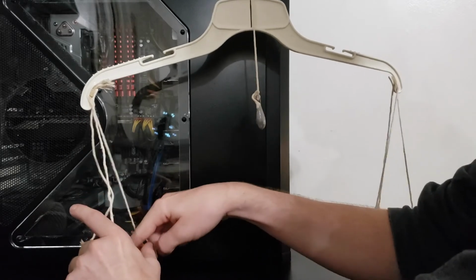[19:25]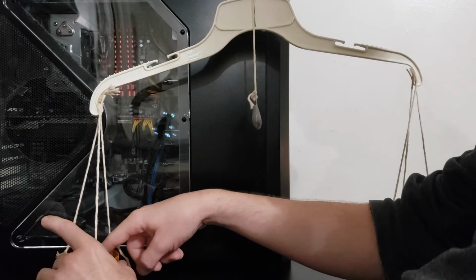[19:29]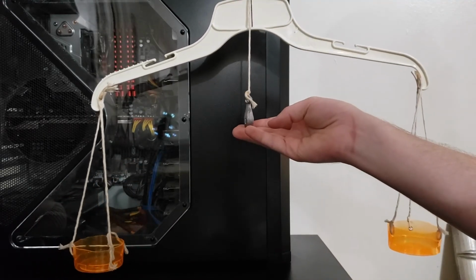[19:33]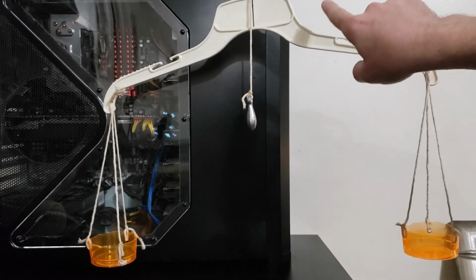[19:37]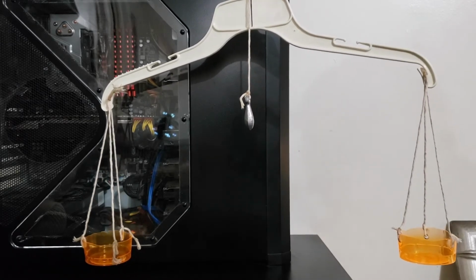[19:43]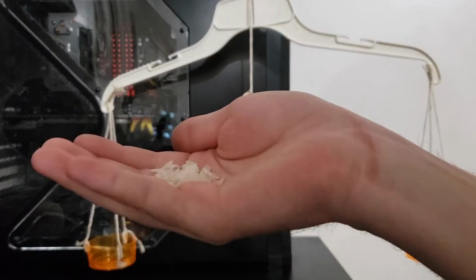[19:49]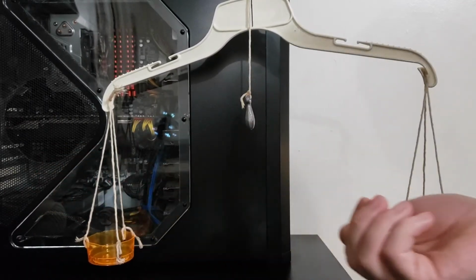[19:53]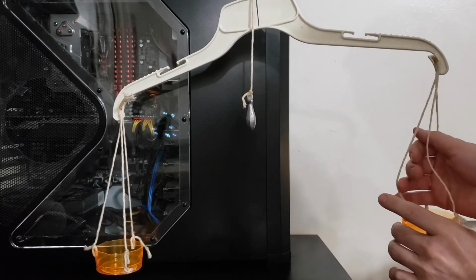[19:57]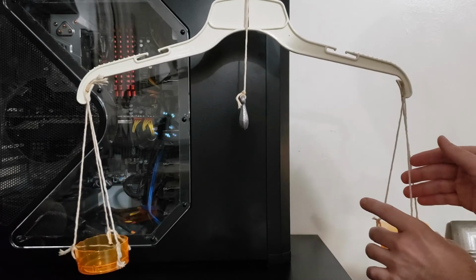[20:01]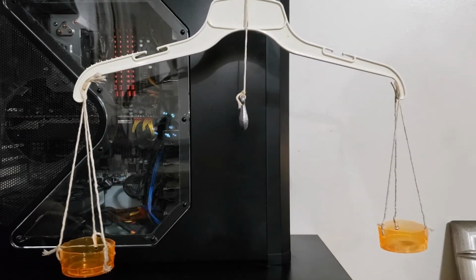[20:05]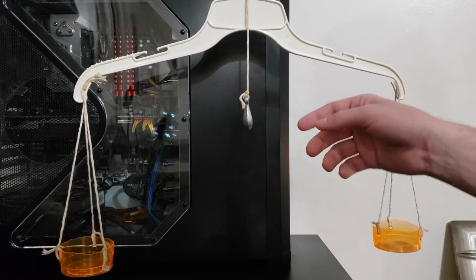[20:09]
So what can we do? Oh, well, what we could do is something like this. We could say, I want to measure 2.5 grams right here on this side with 1 penny. We'll wait for that to balance out. You can see clearly the line is far to the right. And then what we can do is, if we want to get very fine and precise, we could grab some rice. It's a little meticulous and tedious, but we could pour some rice in there. And we can see how many grains of rice is equal to 1 penny, or 2.5 grams.
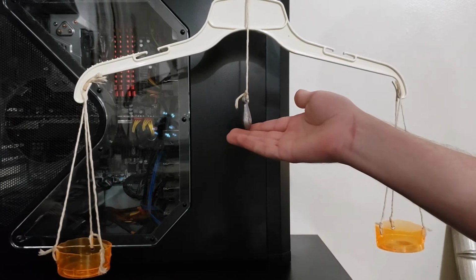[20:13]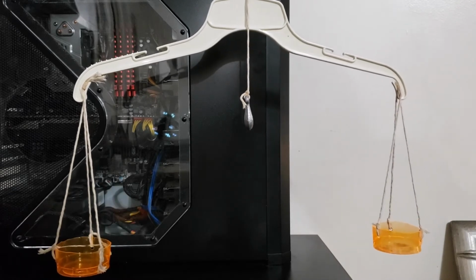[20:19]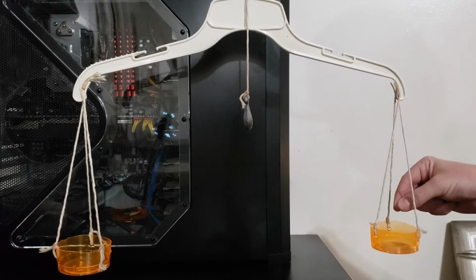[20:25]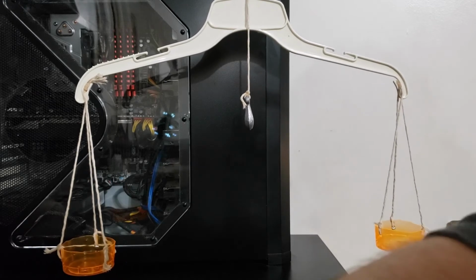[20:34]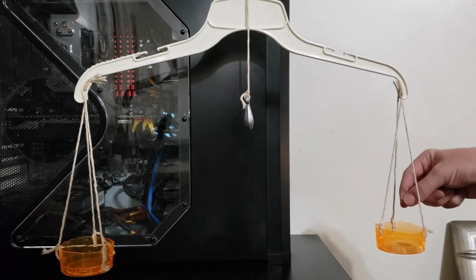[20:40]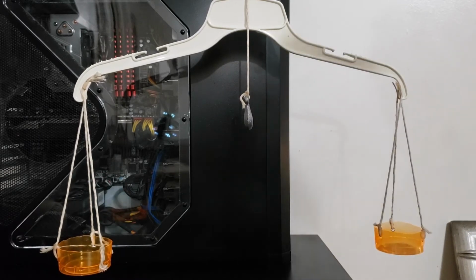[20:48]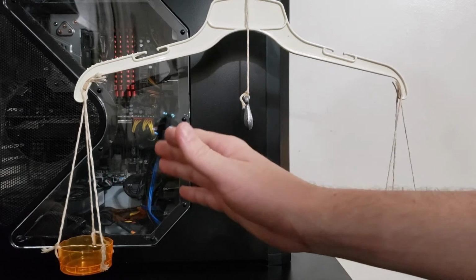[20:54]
Let's wait for that to settle. It should be pretty close. I didn't pre-weigh these, so I'm just guessing here. Maybe just a couple more grains of rice. It doesn't take much to get it to balance. Maybe just a hair more. 3 or 4 more grains. There we go. That looks pretty close. And then what we could do is we could say we know these two things are balanced.
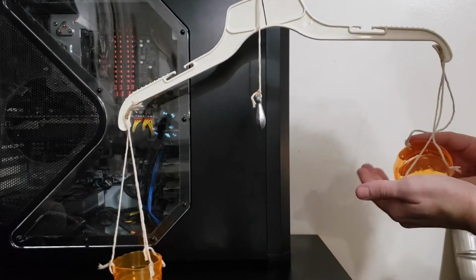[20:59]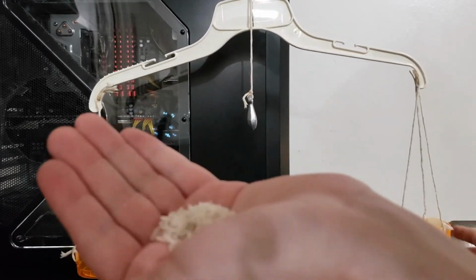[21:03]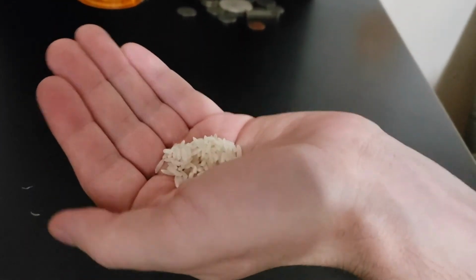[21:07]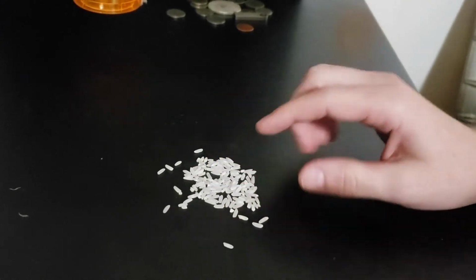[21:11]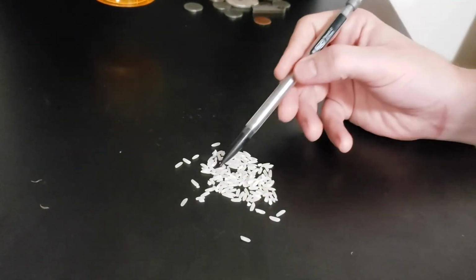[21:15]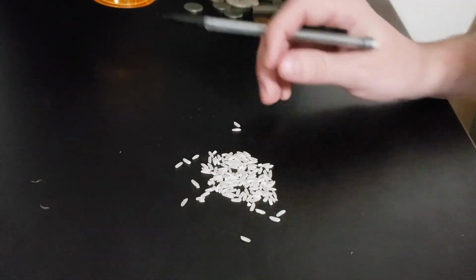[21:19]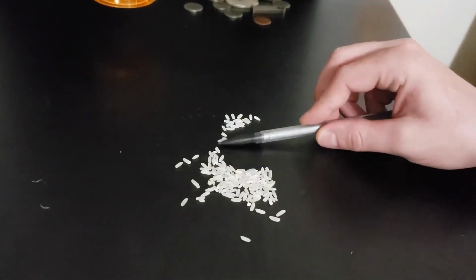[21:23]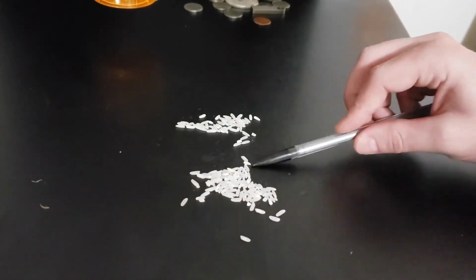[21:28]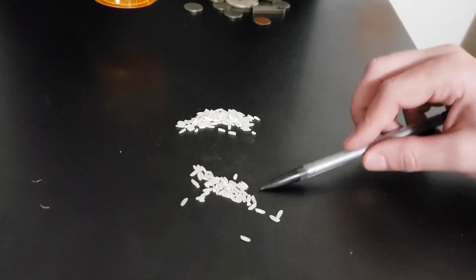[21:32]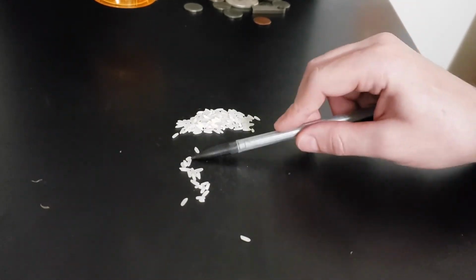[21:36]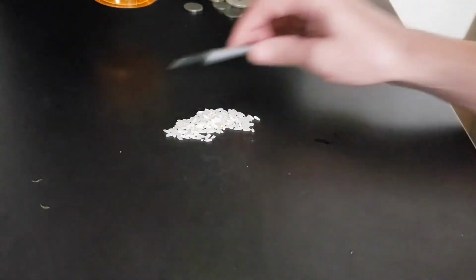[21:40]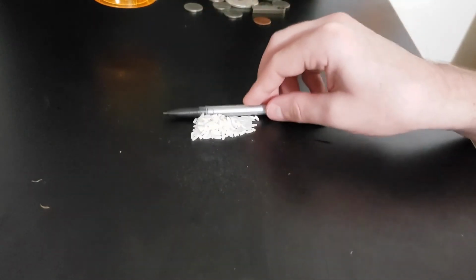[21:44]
We know this much rice is equal to 2.5 grams. That's a fixed weight. And what we could do is literally get quite tedious and take all that rice that we weighed and count it out. I know that's pretty annoying, but if we want to get very fine measurements and weight, this is what we could do. So we could go 1, 2, 3. So it's about 128 grains of rice equal to 2.5 grams.
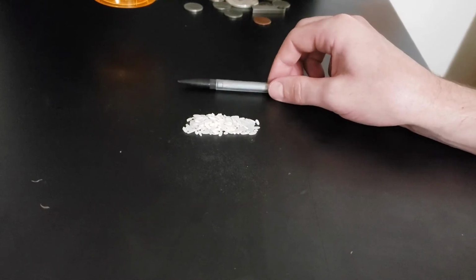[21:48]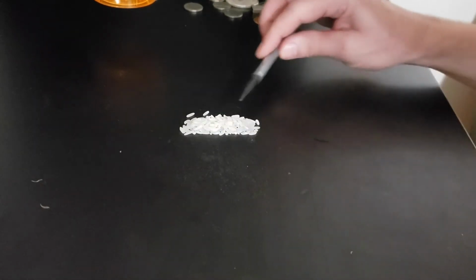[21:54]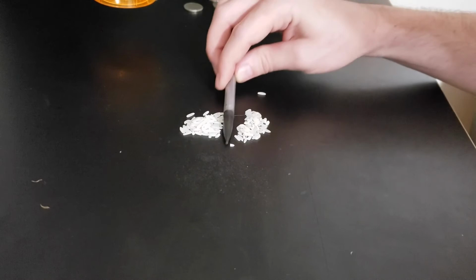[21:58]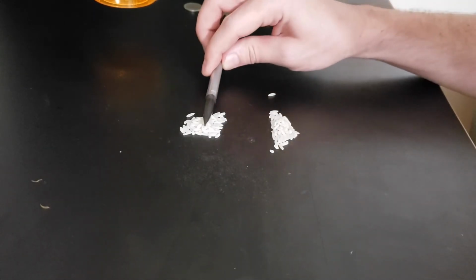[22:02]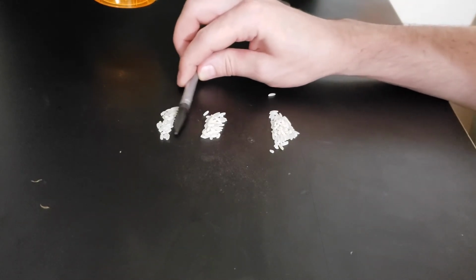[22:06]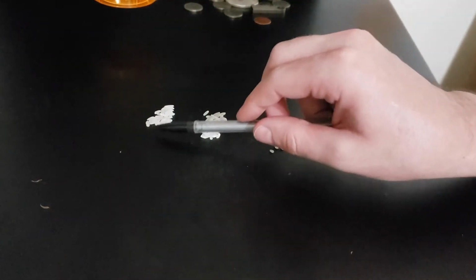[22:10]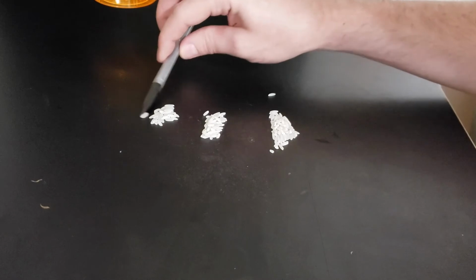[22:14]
Which means we'd be at about 63 grains of rice for about half, which would be about 1.25 grams. And then if we wanted less than that, we could even do half of that again. So we could do like 30 some odd grains of rice would be equal to 0.75 grams. So we can start to get a really accurate picture of what the scale is capable of.
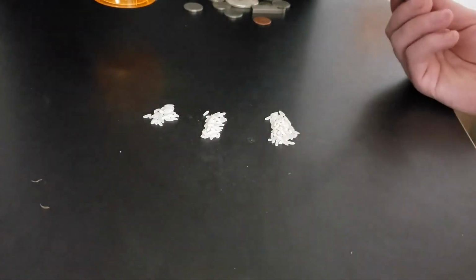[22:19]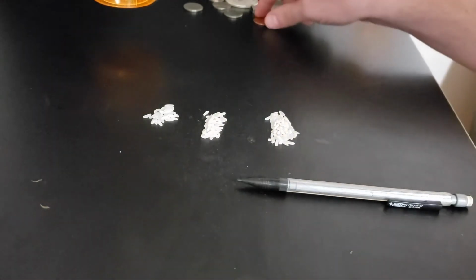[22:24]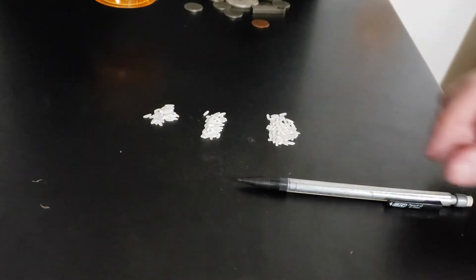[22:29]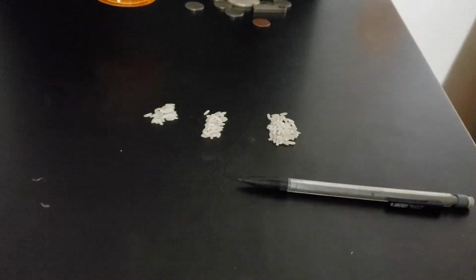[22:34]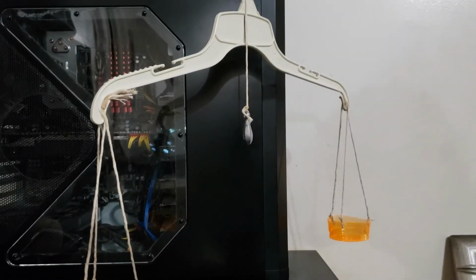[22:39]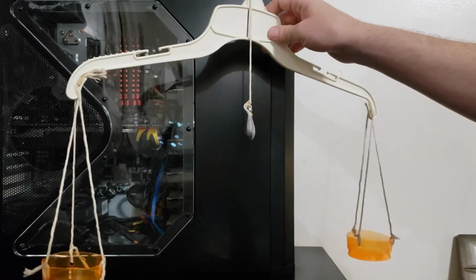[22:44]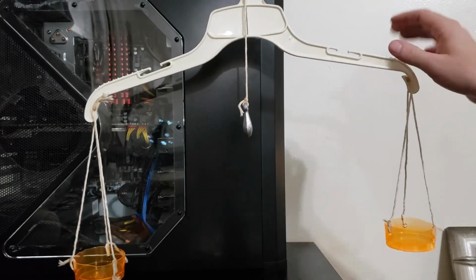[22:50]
If you don't want to count out grains of rice every time, I don't blame you. What you could do is maybe take little pieces of tinfoil and roll them up into balls and weigh them against your grains of rice initially. That way you have a set of very light weights with aluminum foil balls. There's all kinds of things you could do to utilize the scale and do very small measurements. Another thing that we could do to improve this design is instead of using such a thick string here, we could use a very thin piece of string, like maybe a kite string, and that would help with getting us to these very fine measurements as well. For our purposes, this is good enough.
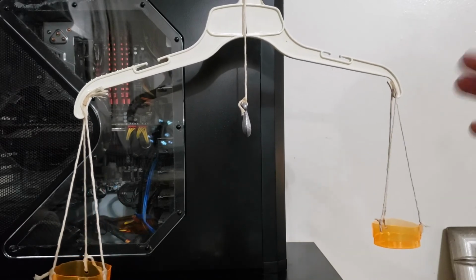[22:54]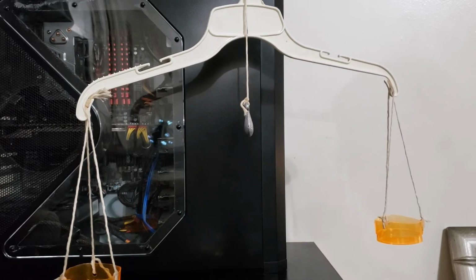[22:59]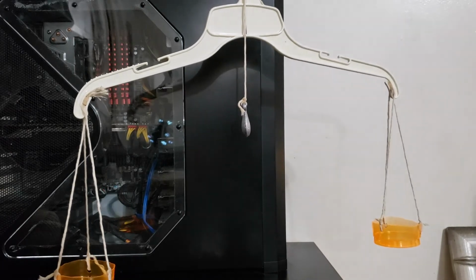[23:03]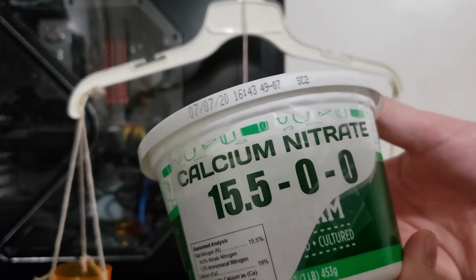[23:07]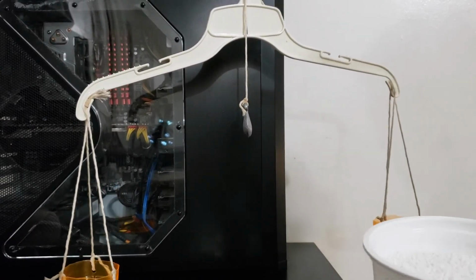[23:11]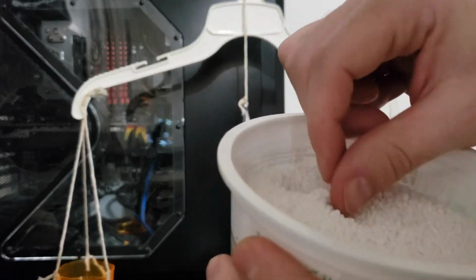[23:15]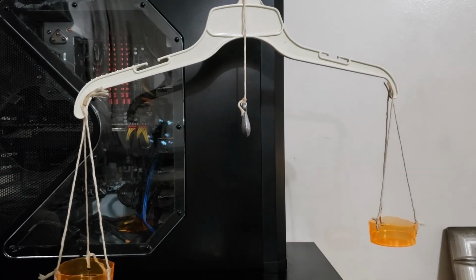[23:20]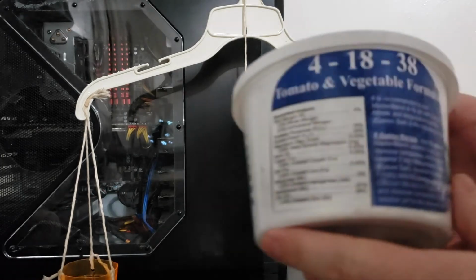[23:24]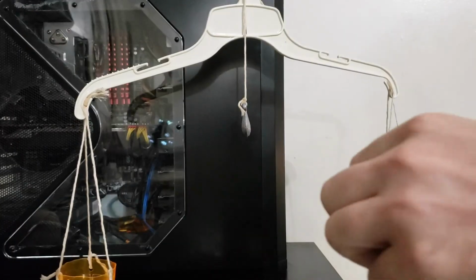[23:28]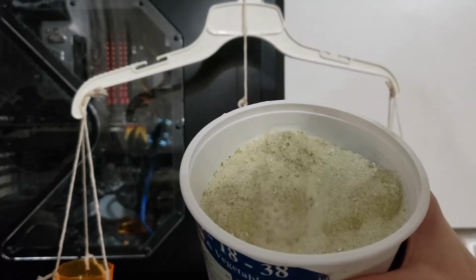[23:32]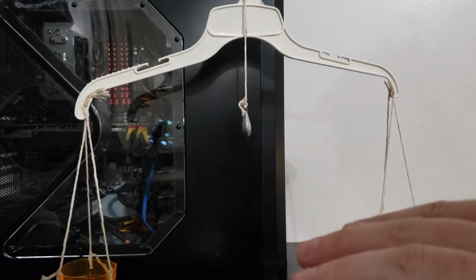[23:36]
What we're going to be using this for is for measuring out small amounts of powdered fertilizer, roughly 1 to 2 grams at a time, and that way we can get our calcium nitrate mixtures and get these little round pebbles in here and weigh those out accurately, close to 1 gram. We also have another one. This is a 4-18-38 fertilizer for tomatoes and vegetables. And this one is also a very fine powder. So we'll be utilizing this scale to measure out 1 and 2 gram increments to mix up our nutrient solution for our plants.